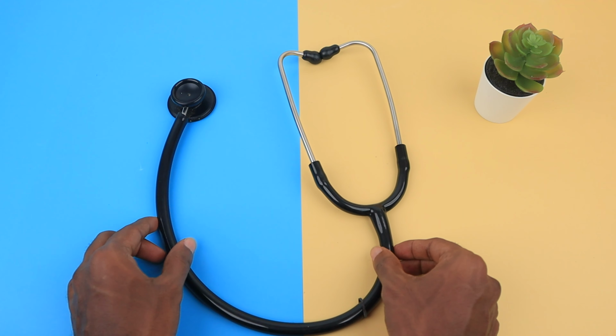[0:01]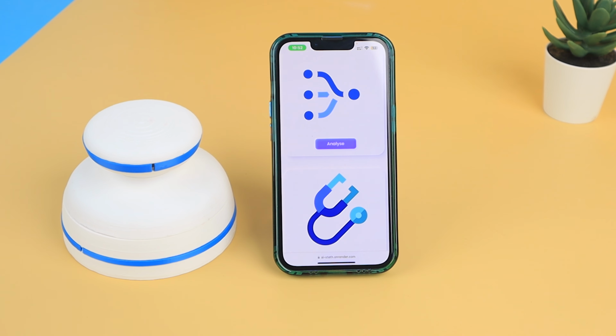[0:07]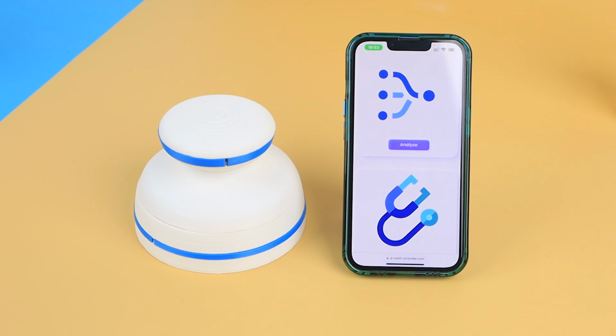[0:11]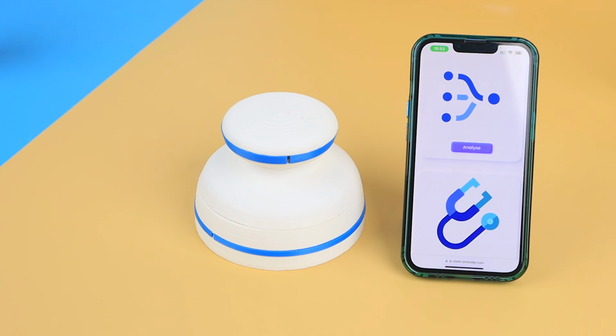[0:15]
The instrument that listens to life, the stethoscope. But how to push it to the next level? So, introducing our AI Steth, the next evolution in healthcare. It honors the legacy of the Steth while taking our wellness journey to a whole new level.
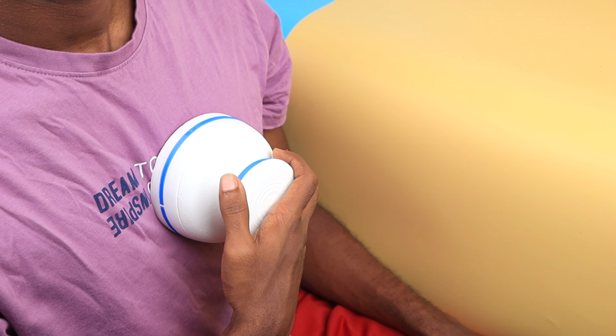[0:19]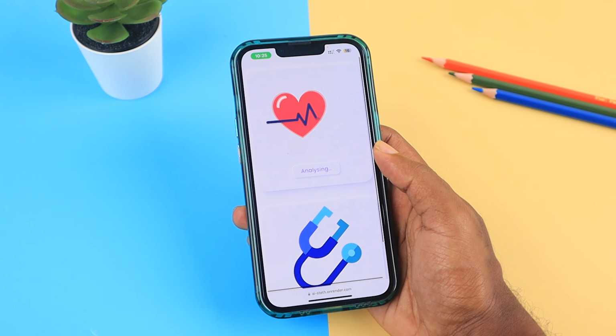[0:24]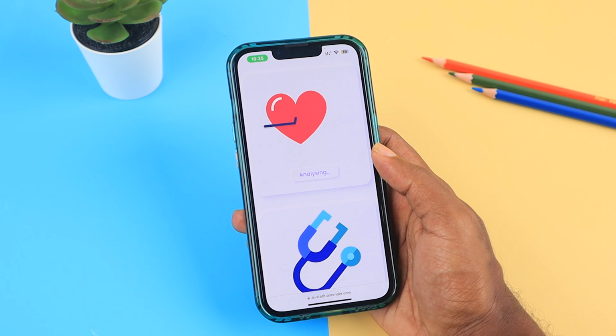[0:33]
Imagine getting real-time feedback on your health right from home. This innovative device uses AI to analyze your heart sounds, helping you understand your health better. Plus, it connects seamlessly with your doctor for a more comprehensive picture. And the best part, it keeps getting smarter.
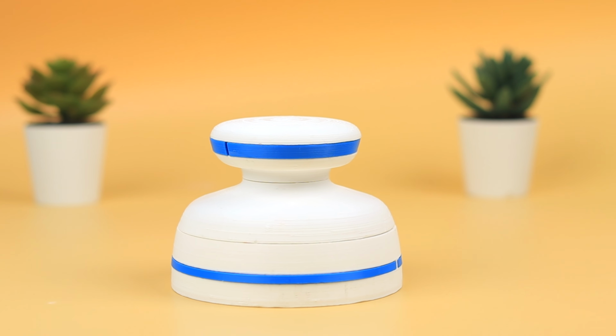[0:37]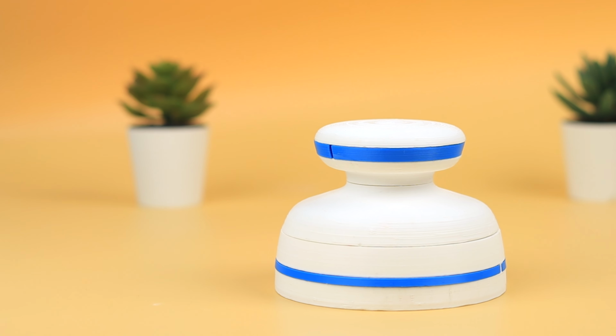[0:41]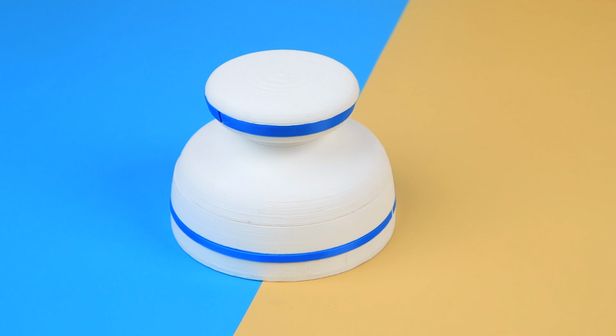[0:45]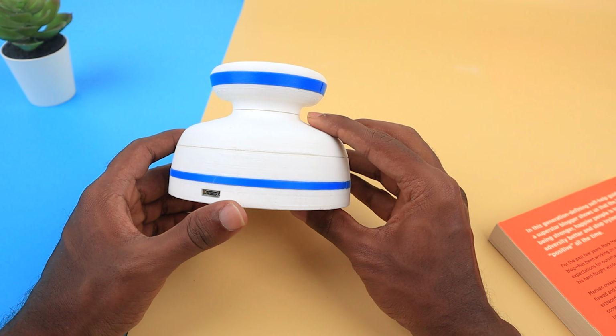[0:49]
The AI Steth will offer personalized insights and connect with your other smart health devices, creating a powerful support system for your well-being. Ready to unlock the future of healthcare? Let's explore the incredible potential of AI Steth and see how it is built.
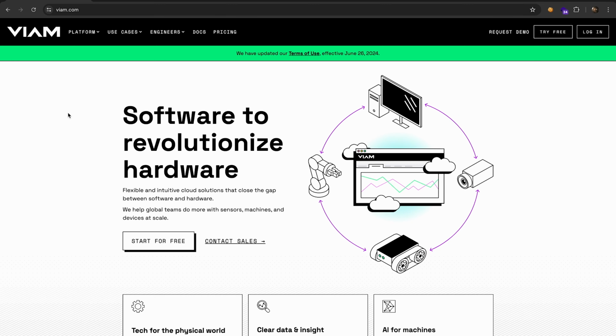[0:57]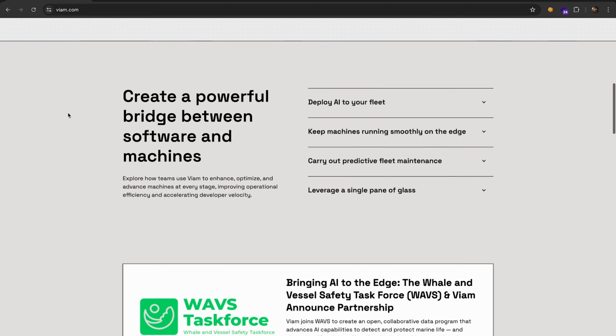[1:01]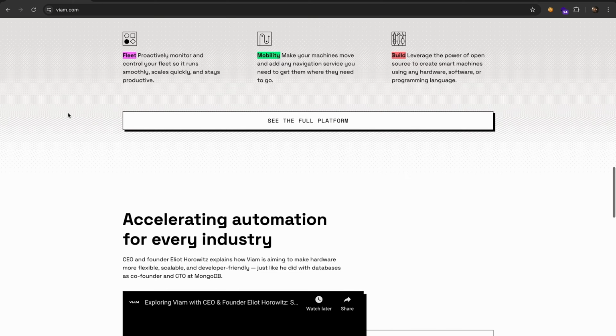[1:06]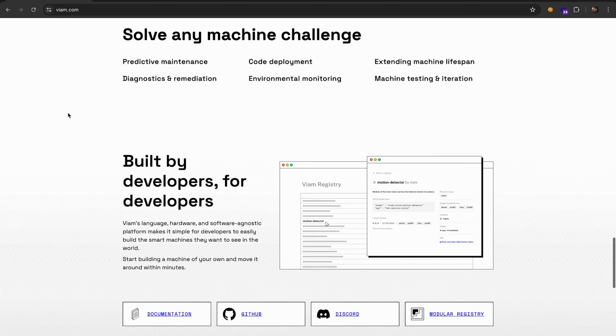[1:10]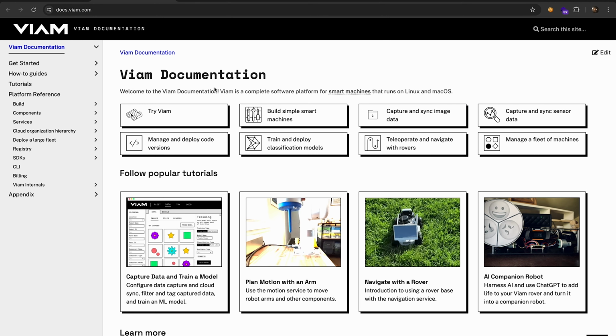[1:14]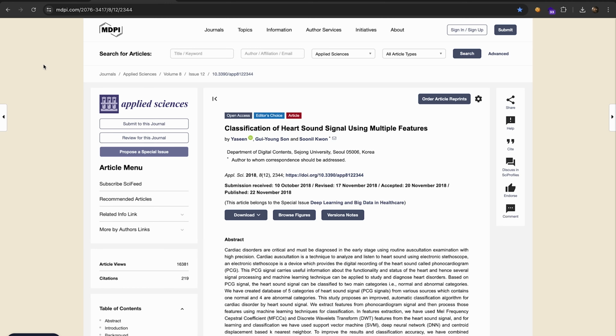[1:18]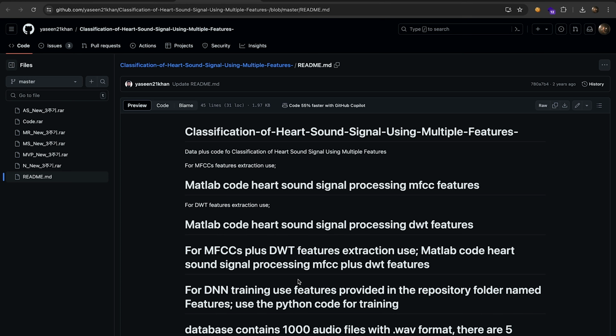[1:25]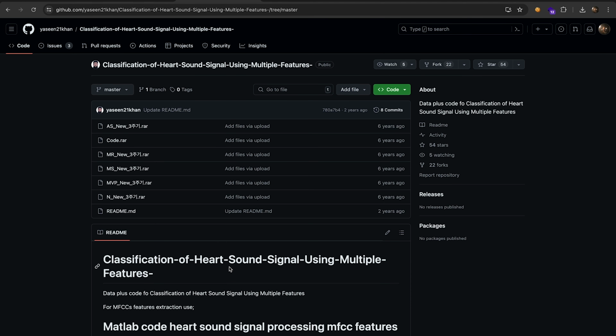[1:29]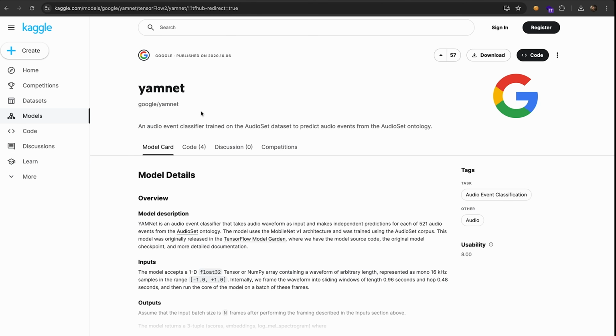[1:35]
Let's start by training a machine learning model first. So we start with data collection using a public dataset with different heart conditions. Then we pre-process the data and use a technique called transfer learning, where we build on pre-trained models like YAMNet for better performance. YAMNet is an audio event classifier developed by Google, which we adapt for detecting heart diseases. This approach saves time and improves accuracy by leveraging already learned features.
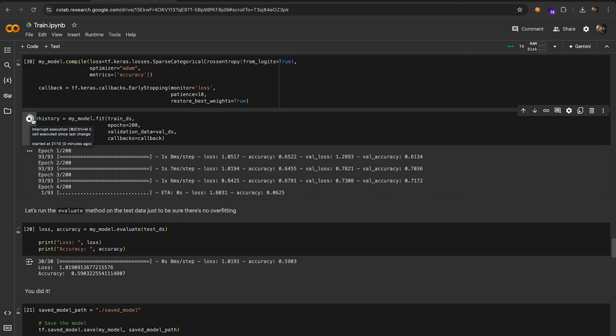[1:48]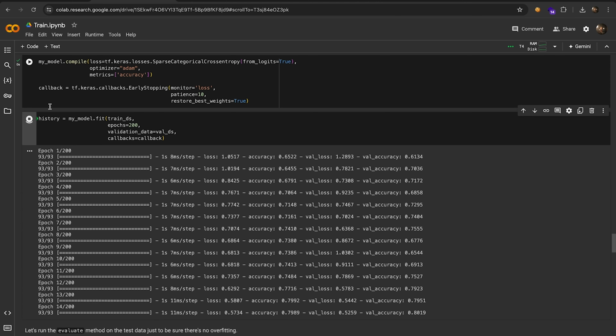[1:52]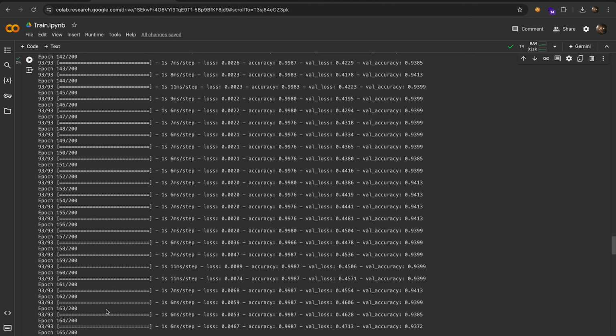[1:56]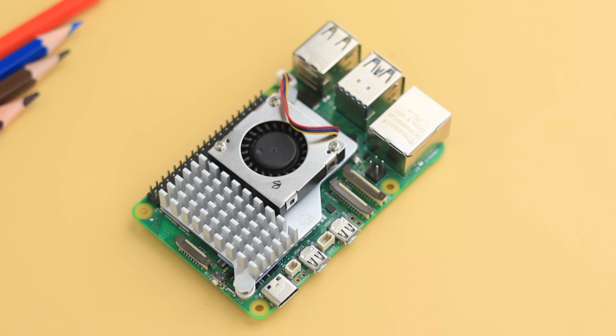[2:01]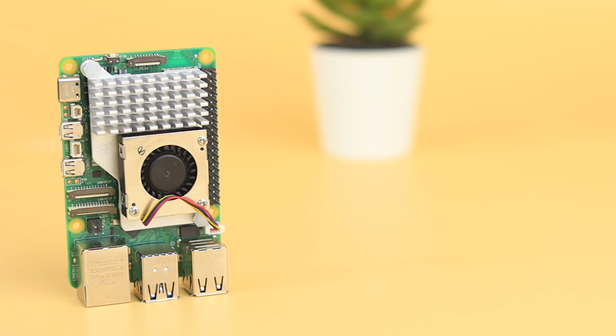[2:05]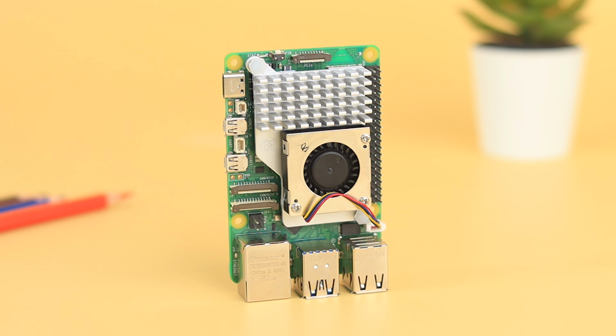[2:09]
After extensive training and testing, our model achieves impressive accuracy, demonstrating its ability to generalize and make reliable predictions on real-world data. Now, it's time to test the model in a real-world setting. For this, we are utilizing the Raspberry Pi 5, a robust and high-performance single-board computer that offers native support for machine learning and seamless integration with Viam.
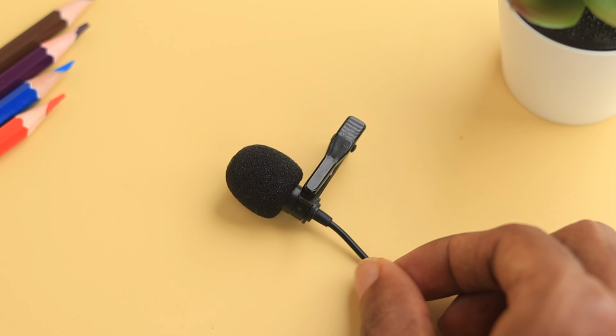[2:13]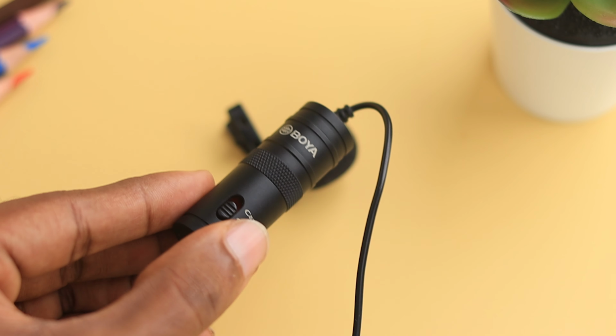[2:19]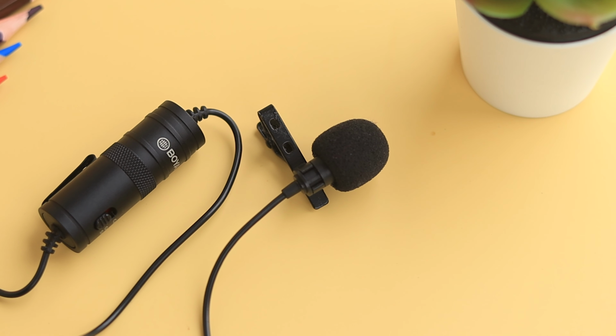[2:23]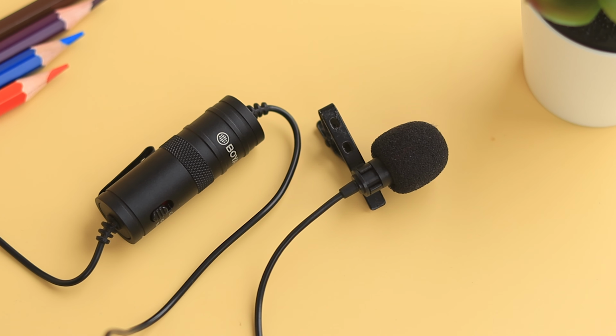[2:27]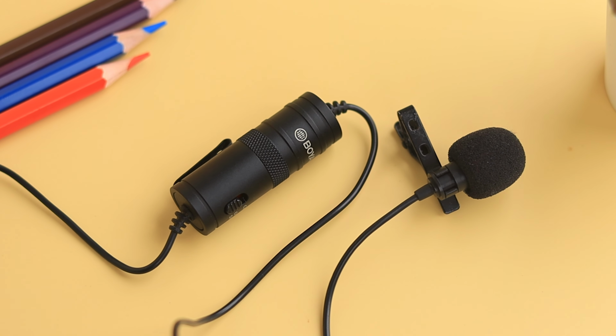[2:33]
To capture sound from the Steth, we are using the Boya microphone. This omnidirectional microphone captures sound from all directions with equal sensitivity, ensuring comprehensive audio collection. Its flat frequency response faithfully reproduces audio across the entire spectrum, delivering clear and accurate sound quality.
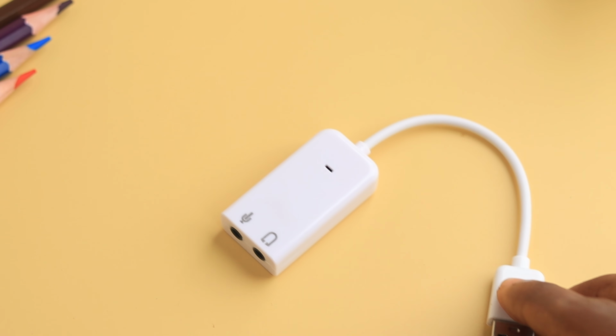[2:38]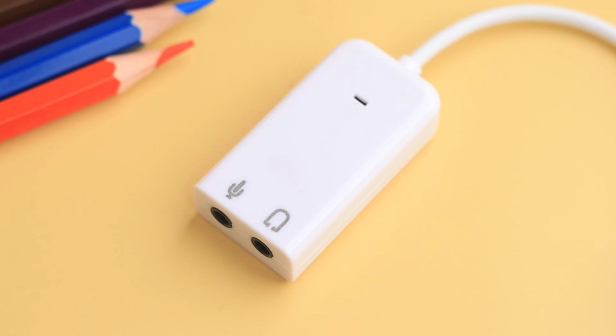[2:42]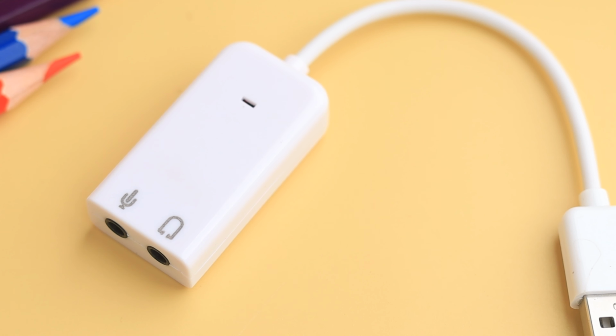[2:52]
Raspberry Pi doesn't come with a built-in audio input, so a sound card is necessary for such purposes. A sound card is a hardware component that facilitates audio input and output on a computer. It typically features a USB interface on one end for connecting to the computer and 3.5mm jacks for microphone and speaker connections on the other end.
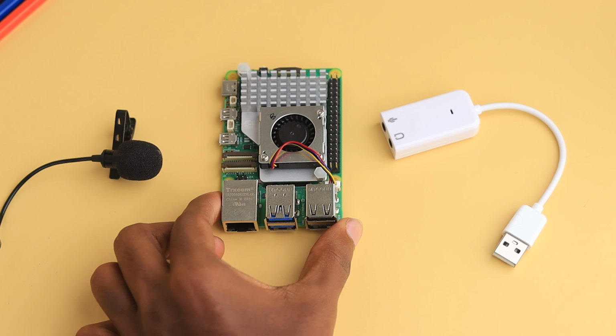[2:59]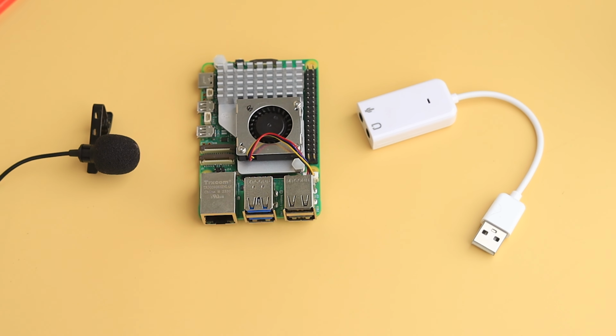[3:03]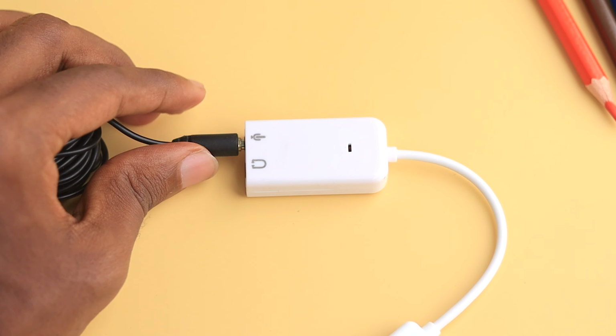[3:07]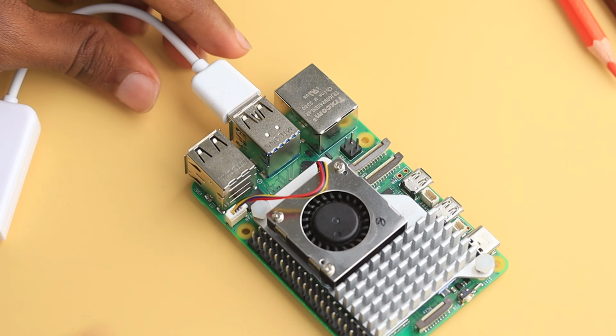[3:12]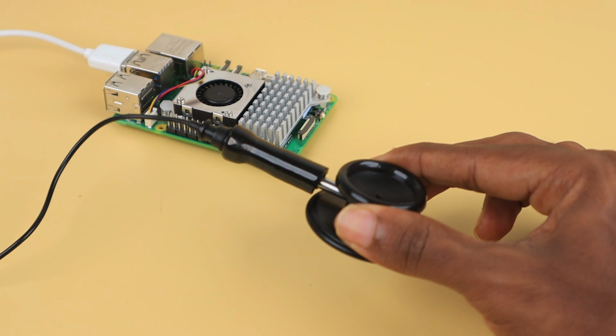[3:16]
Now that we have all the required hardware for our real-world testing, let's proceed with the setup. The hardware connection is straightforward. Connect the Boya microphone to the sound card, then plug the sound card into one of the USB ports on the Raspberry Pi 5. Now attach the Steth to the mic. With these connections, our setup is ready for testing.
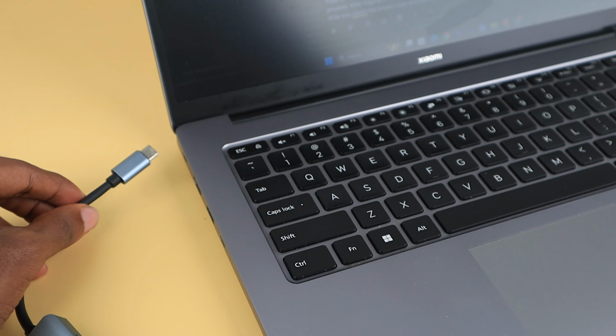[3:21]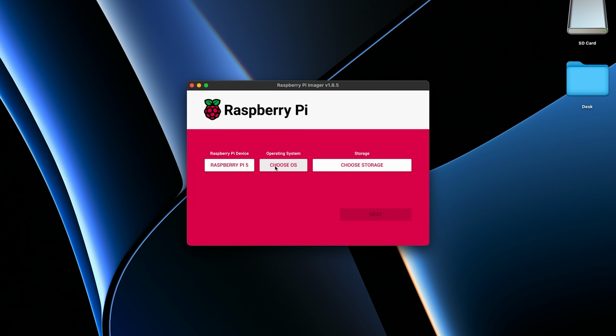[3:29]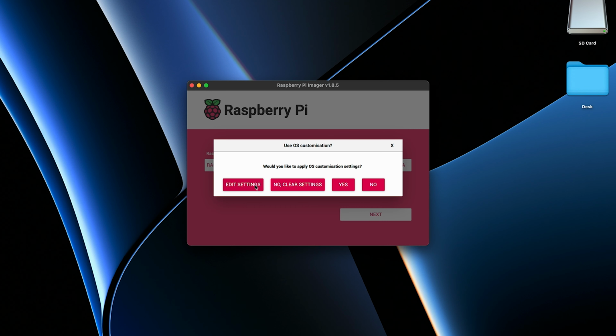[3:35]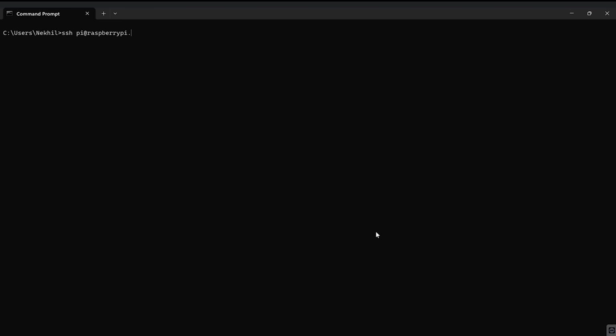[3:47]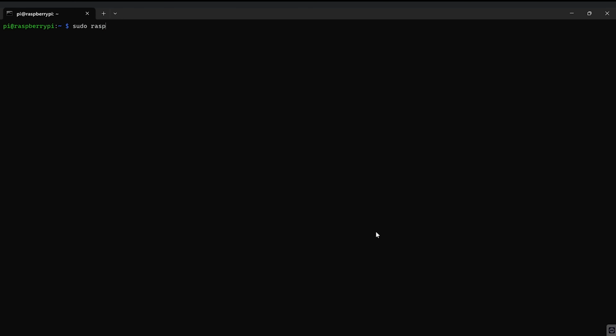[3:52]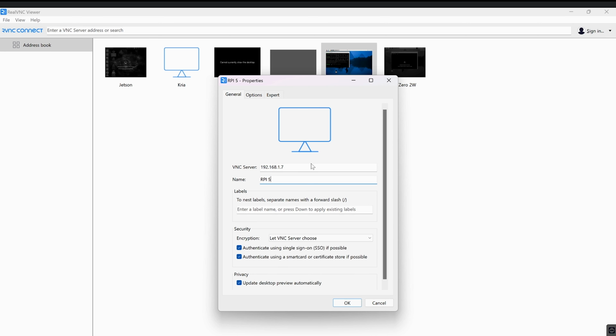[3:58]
Now let's move on to the software setup. We will begin by installing the Viam server on the Raspberry Pi 5. We started by booting our 32GB SD card with the latest Raspbian OS, ensuring that Wi-Fi details and SSH are properly configured. After booting up the Pi 5, we accessed the terminal via SSH to enable the VNC server. With the VNC server enabled, we can now access the GUI using VNC Viewer.
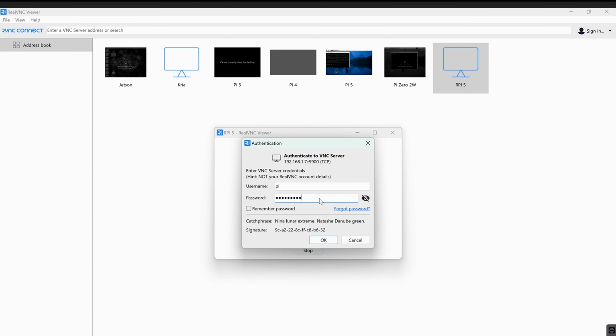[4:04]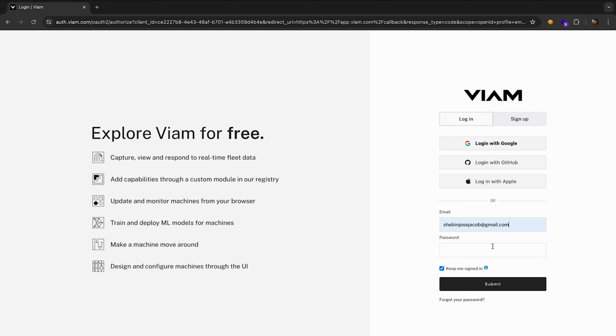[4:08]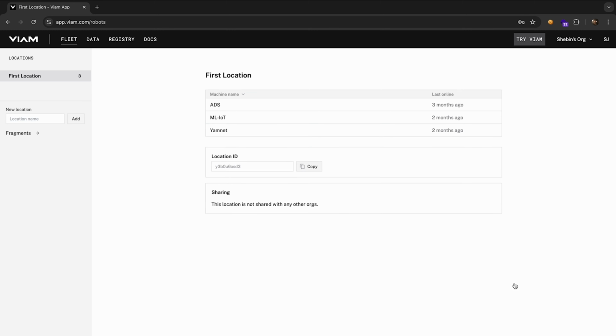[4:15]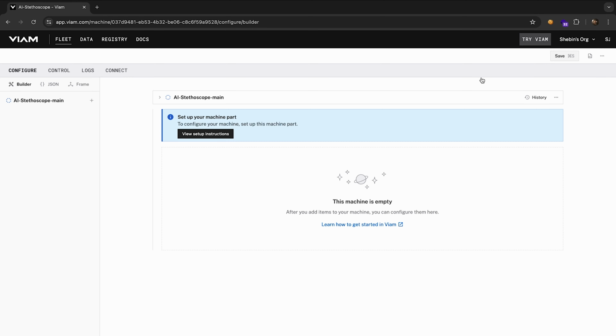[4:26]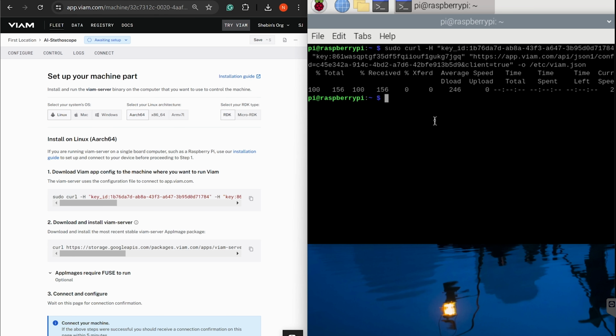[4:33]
Now let's start setting up the Viam server on Raspberry Pi. We start by logging into the Viam app. If you don't have an account, create one and proceed. After logging in, create a new project, in our case AI Stethoscope. After you create the project, copy and paste these commands from the setup instruction, which will download and install the Viam server on your Raspberry Pi.
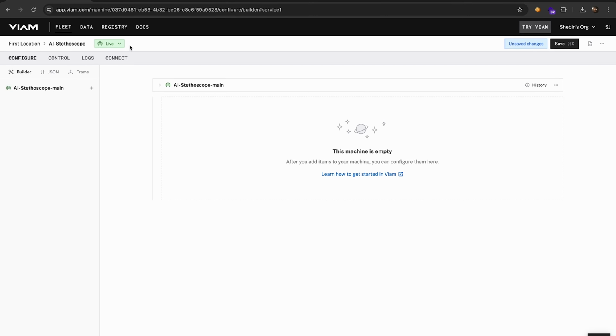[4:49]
Once the Viam server starts running on the Raspberry Pi, you can see the device's online status on your dashboard like this. Next, it's time to integrate the machine learning service into our project.
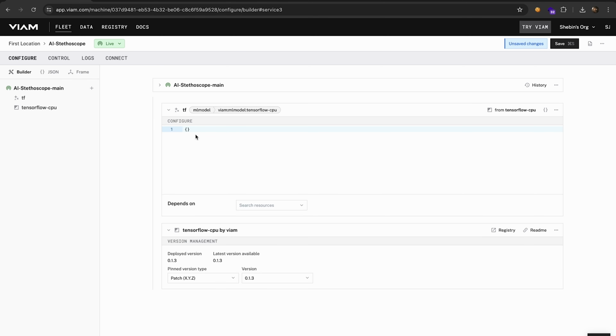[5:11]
We use the TensorFlow CPU service from the model registry, a module of the Viam ML model service that facilitates CPU-based inference on a TensorFlow model. This requires two attributes, the model path and the label path on the Raspberry Pi.
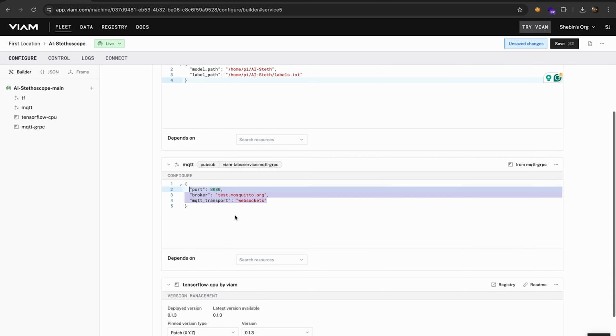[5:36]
We are also using the PubSub module from the model registry. With this service, you can interact with the MQTT brokers to publish and subscribe to topics in our projects. This service requires two compulsory attributes, but we have given 3 as we are using WebSockets instead of default TCP.
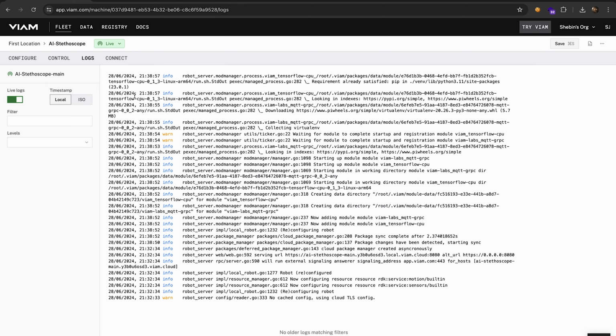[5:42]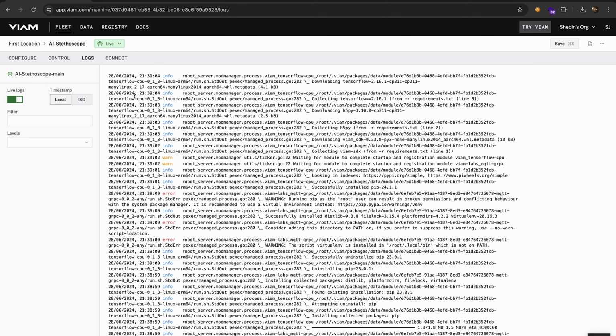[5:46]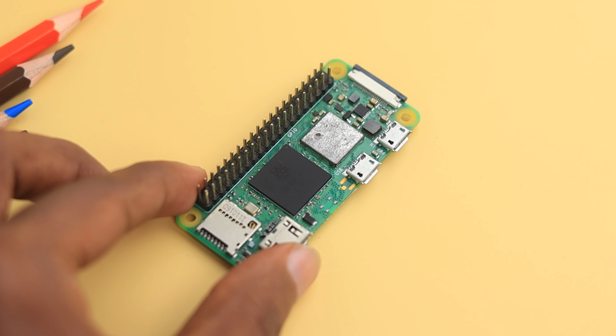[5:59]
After saving the config, we need to wait for a few minutes while Viam server installs and starts up the modules. It is quite interesting to watch the logs update as the Viam server sets up everything one by one. After a few minutes of waiting, everything is online and ready to dash. Now we have successfully completed our setup.
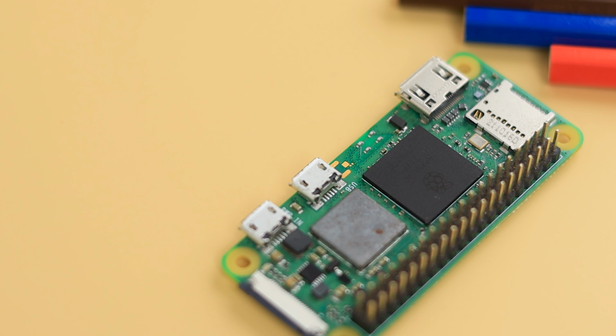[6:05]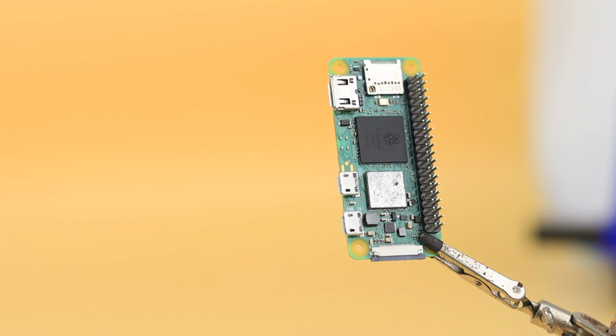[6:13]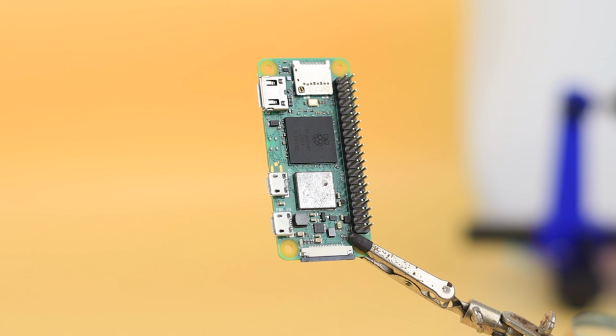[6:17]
To make the AI Steth a handheld and portable device, we thought of using a smaller board that is comparable to RPI 5 in performance. So we opted for Raspberry Pi Zero 2W. The Pi Zero 2W is a compact and affordable single board computer that offers impressive performance in a tiny package.
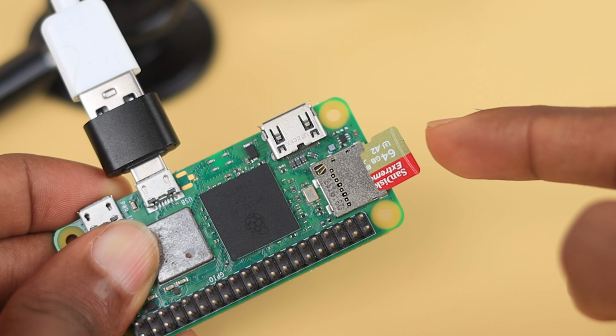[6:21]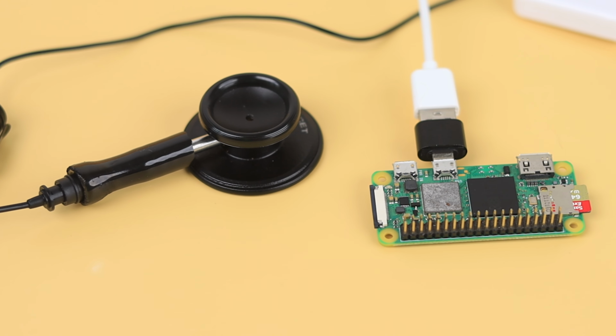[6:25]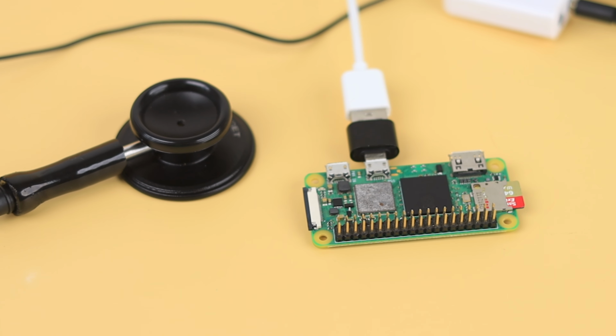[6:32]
Now it's quite simple, just unplug the SD card from the Pi 5 and plug it in the Pi Zero 2 W. But there is a catch. After porting everything from Pi 5 to Pi Zero 2 W, we expected everything to work, but it didn't.
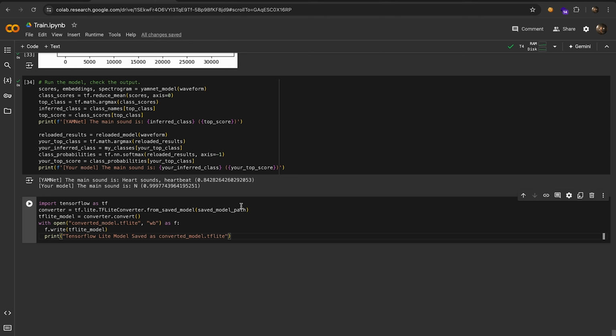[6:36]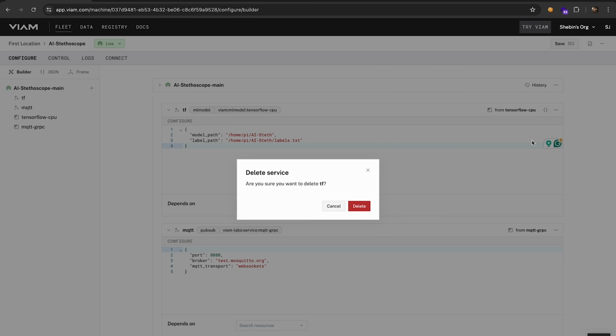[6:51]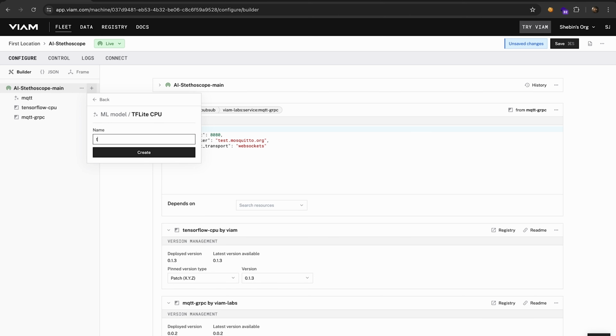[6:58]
To optimize performance for less powerful boards like the Pi 0, we converted our TF model to a TF Lite model with a few lines of code. Fortunately, Viam offers native support for TF Lite models through their ML model service. We then removed the TF service and added the TF Lite service, supplying the model paths to complete the setup.
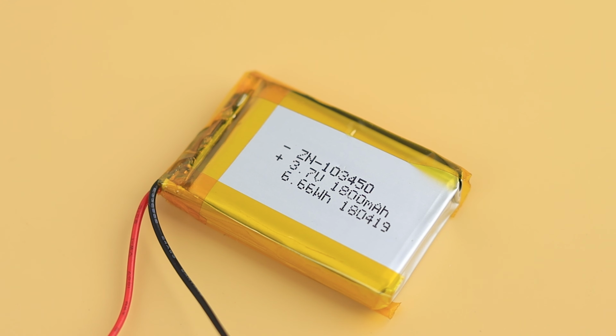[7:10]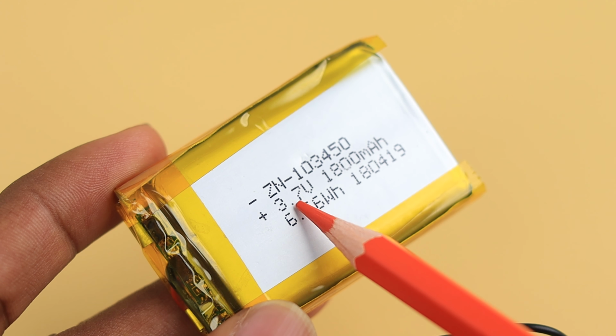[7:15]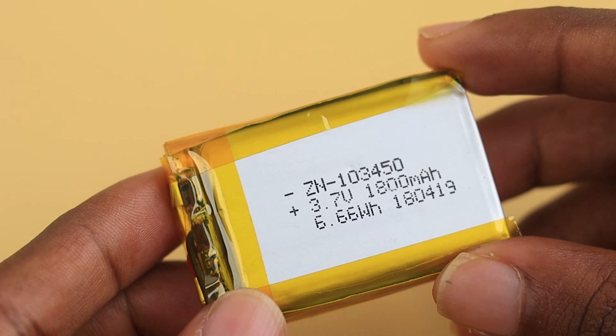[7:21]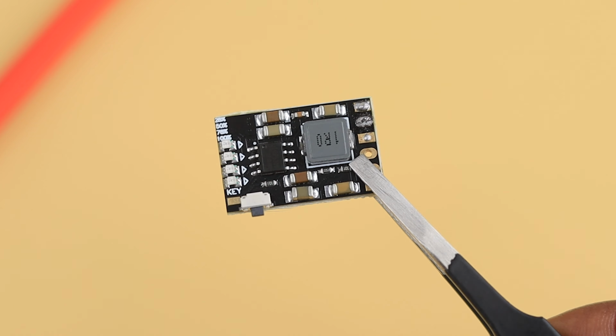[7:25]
Now it's time to add some additional hardware to make the device independent and portable. To power up the Raspberry Pi, we are using a 1800 mAh LiPo battery, which has a nominal voltage of 3.7 volts and can provide up to a maximum of 4.2 volts when fully charged. But the Raspberry Pi operates at 5 volts. To resolve that issue, a voltage boost converter module is used.
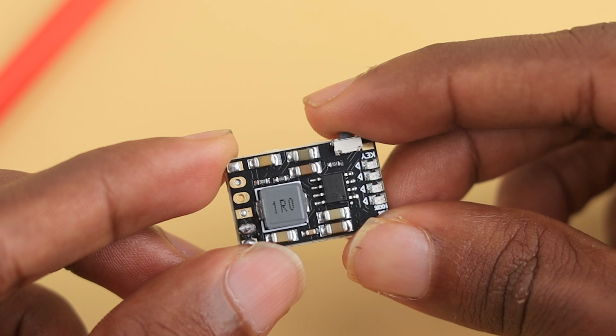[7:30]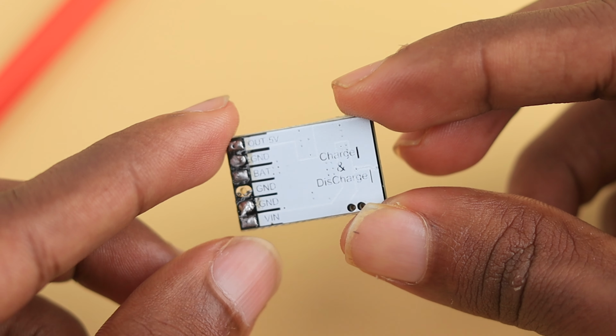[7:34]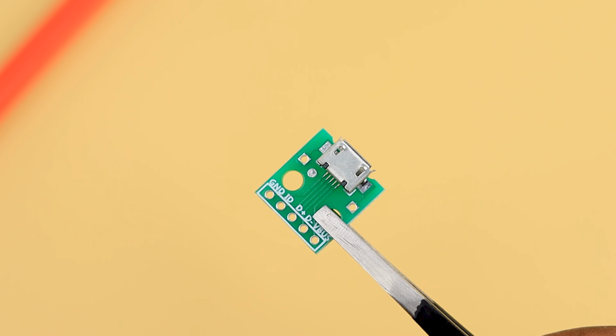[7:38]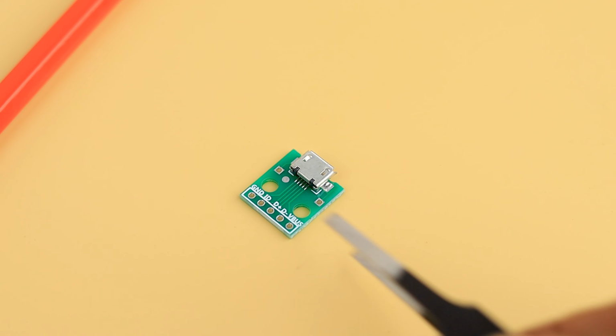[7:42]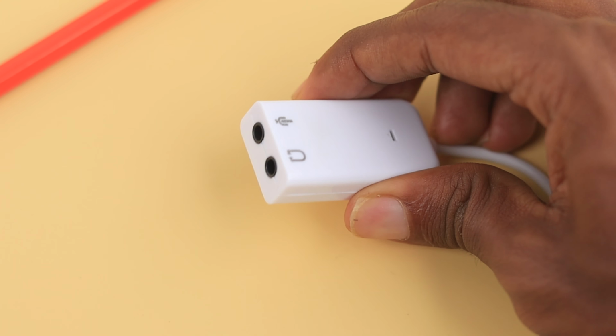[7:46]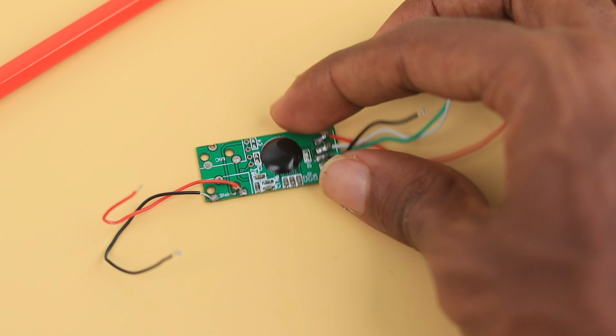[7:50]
Apart from the voltage boosting, it can also act as the charge controller for LiPo battery. But this module does not have any standard charging input, so to mitigate that issue, we have used this tiny micro USB breakout module. To save space in this device, we have removed the cases of the USB sound card and will make direct connections between the RPi and the sound card module.
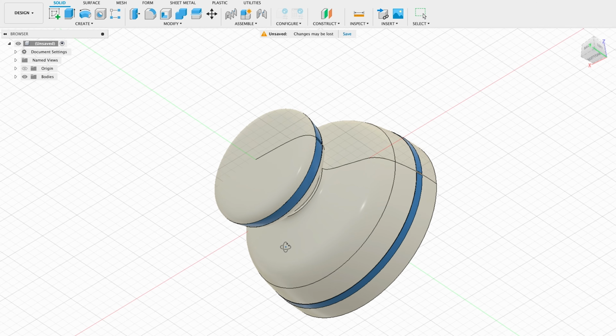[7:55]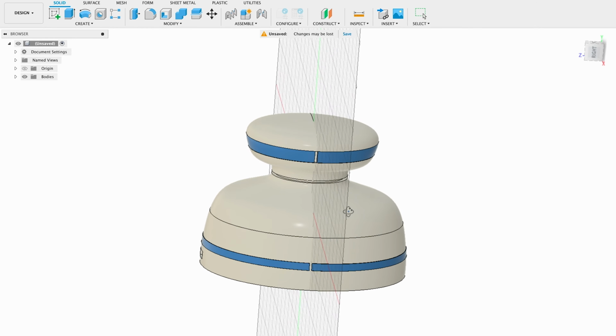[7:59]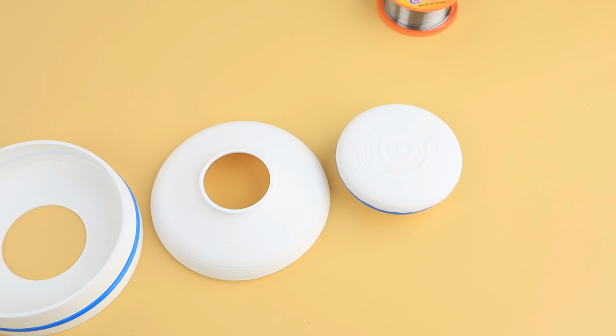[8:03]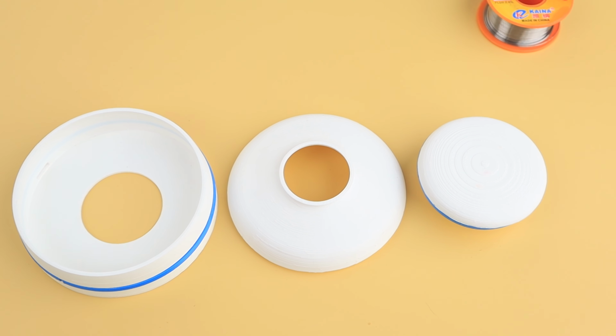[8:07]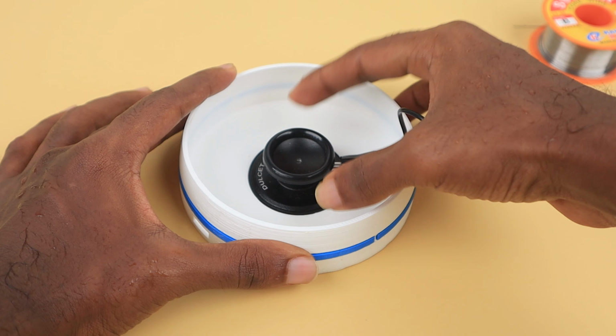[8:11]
We designed a 3D printed enclosure in Fusion 360 to house all the components, making it easy to carry and use. The parts are then 3D printed using PLA filament and will look like this before joining them together. Now we have all the hardware required, we will start assembling them to form the final device.
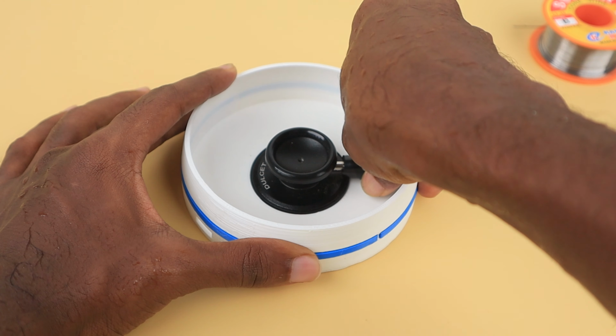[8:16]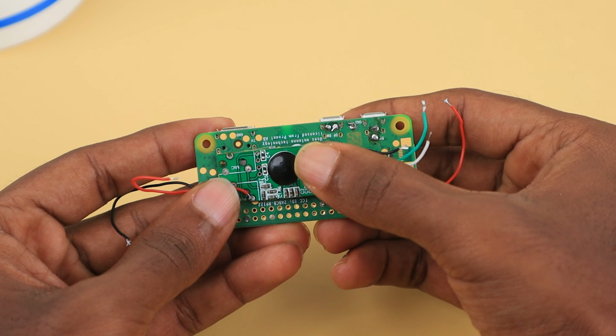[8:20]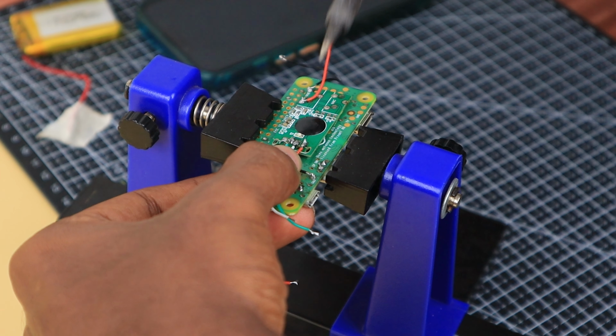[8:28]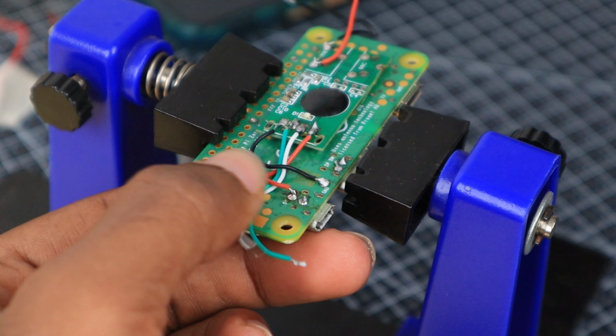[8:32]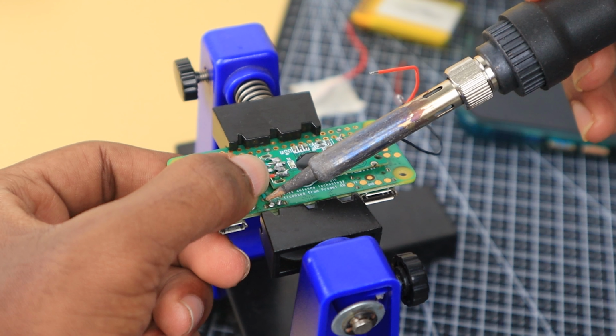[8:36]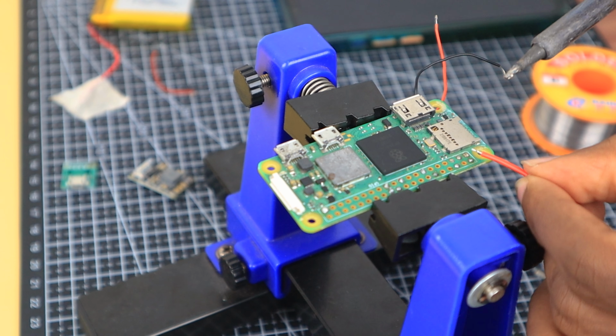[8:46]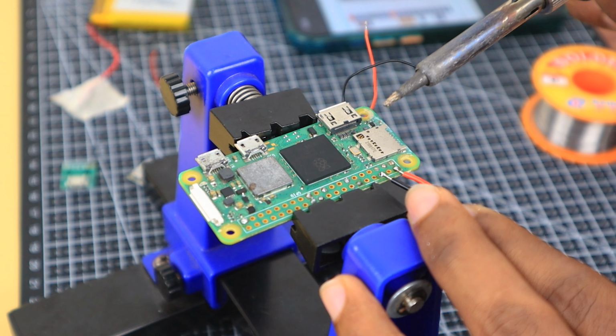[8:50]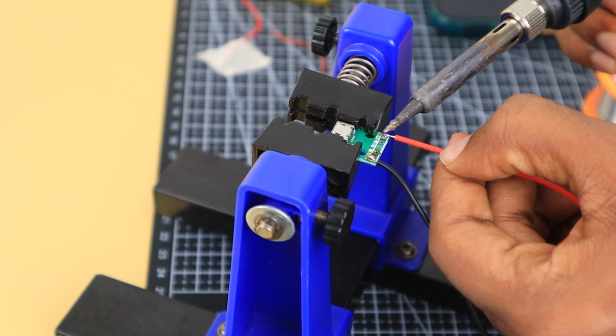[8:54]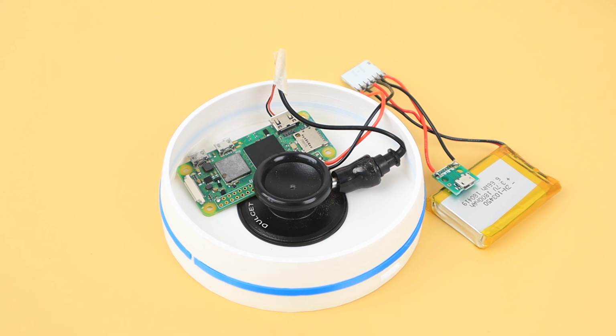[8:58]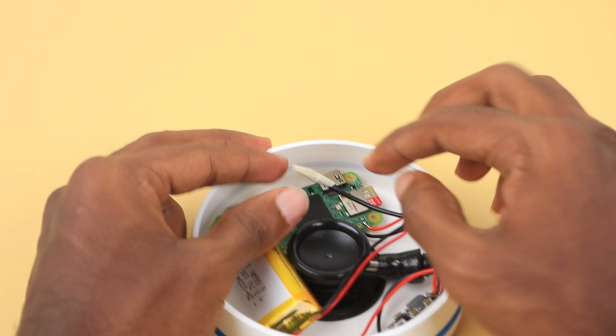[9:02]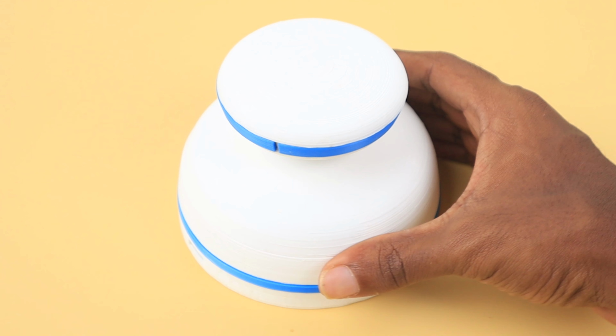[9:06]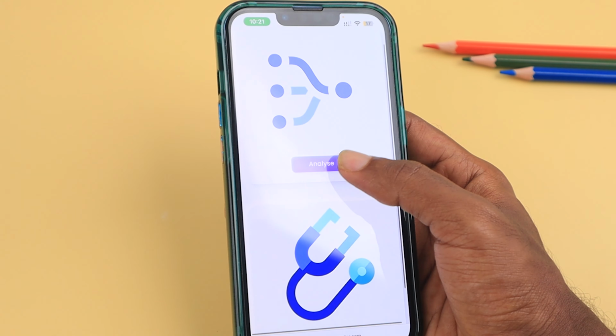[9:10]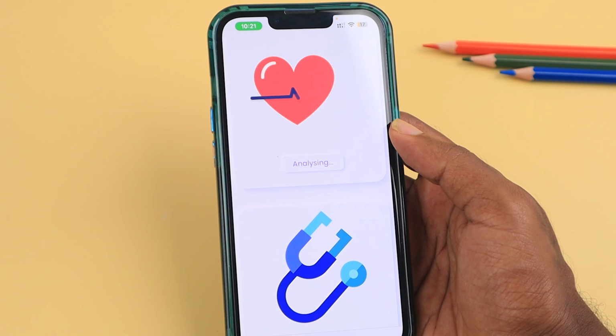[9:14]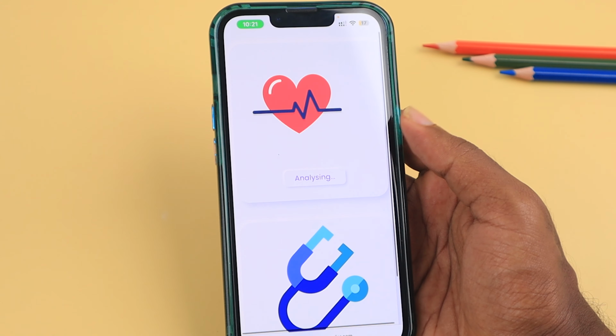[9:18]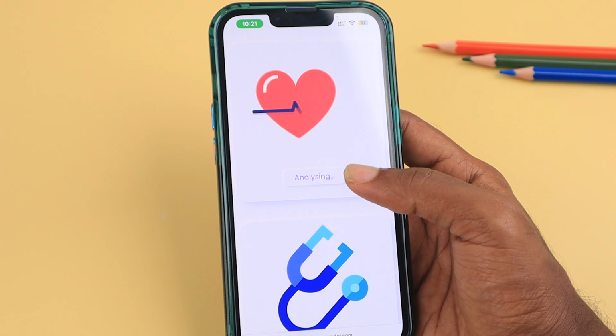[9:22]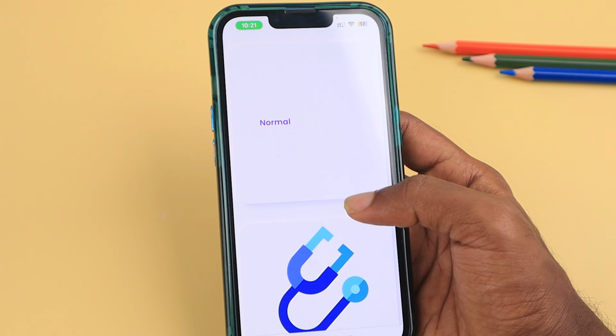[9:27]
We have designed a companion app for the AI Stethoscope. The companion app uses MQTT to communicate between the device and app. Currently, we have two modes: analysis mode, in which the heartbeat is analyzed by AI to find any potential diseases, and stream mode, in which the heartbeat sound is streamed to the doctor using the dashboard.
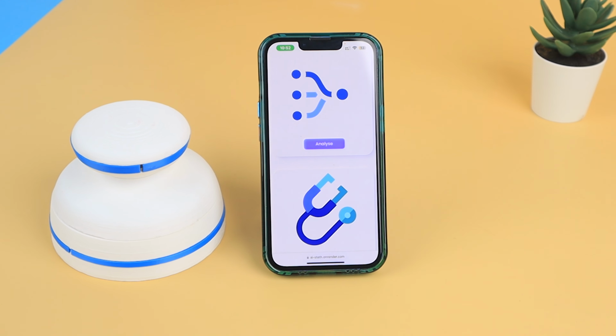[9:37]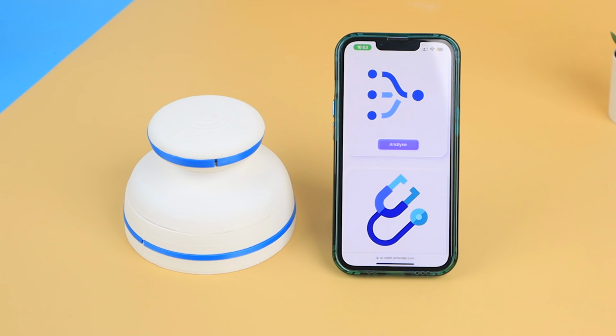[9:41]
The dashboard is designed using HTML, CSS and JS and uses the MQTT JS library to give MQTT capabilities to the dashboard. And there you have it, the AI Stethoscope, a groundbreaking leap towards a smarter, more accessible healthcare.